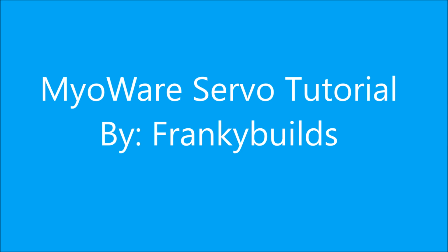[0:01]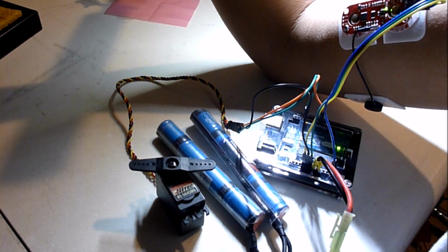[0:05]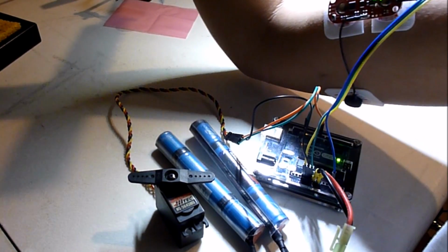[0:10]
Hello, today I'm going to teach you how to control the servo using the MyoWare sensor by Advancer Technologies.
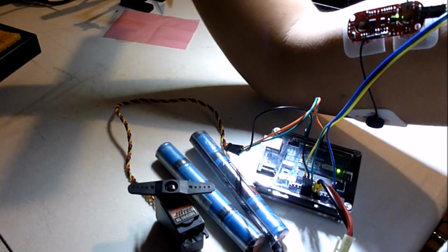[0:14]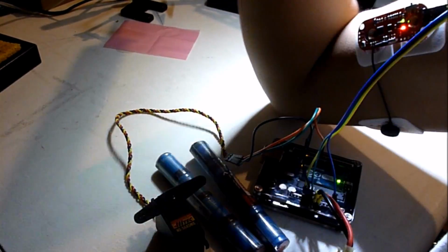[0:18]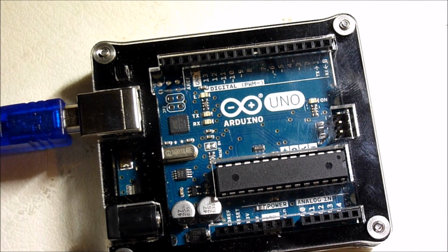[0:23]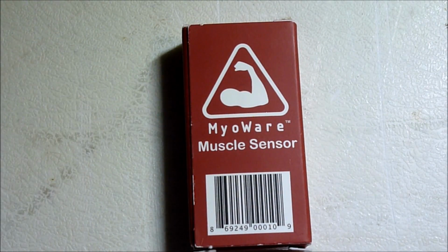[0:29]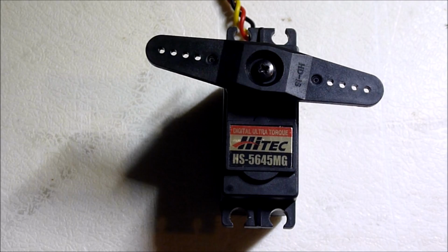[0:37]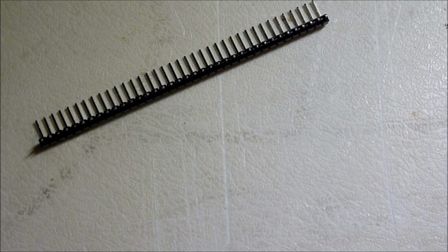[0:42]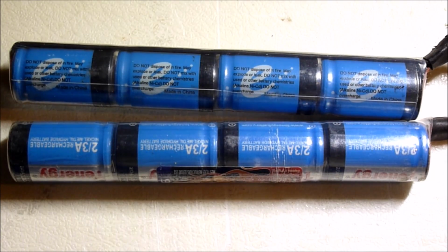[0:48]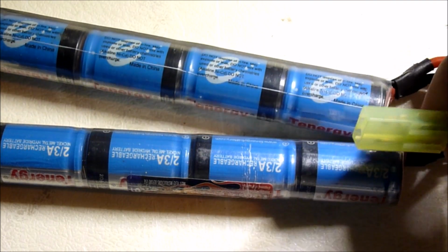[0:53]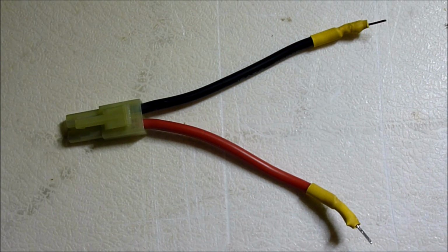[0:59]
So today I'm using an Arduino Uno, a MyoWare muscle sensor, a high torque servo, angled header pins, a 9.6 volt butterfly type battery with a small Tamiya type connector, and an adapter to attach my battery to the board.
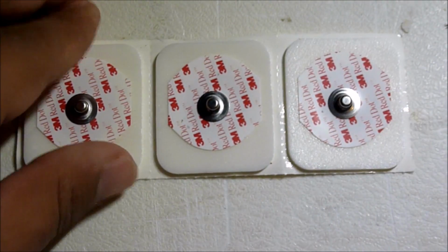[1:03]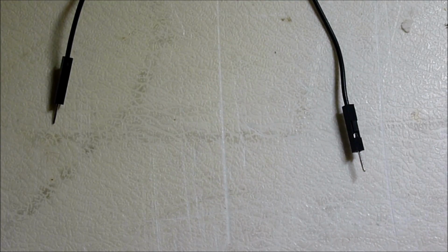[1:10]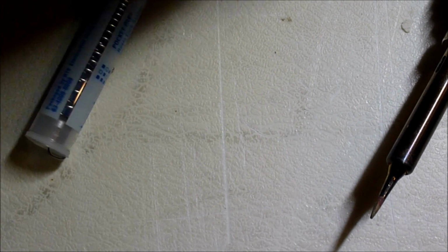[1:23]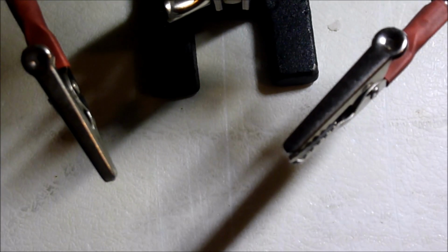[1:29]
3 electrodes, male-to-male jumper wires, female-to-male jumper wires, a soldering iron and some solder, and a helping hand to help me solder.
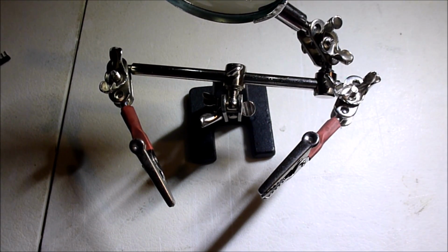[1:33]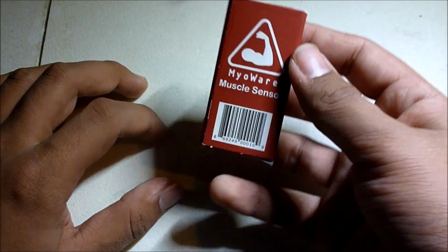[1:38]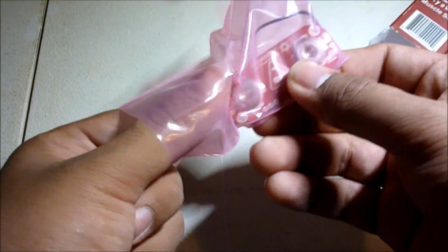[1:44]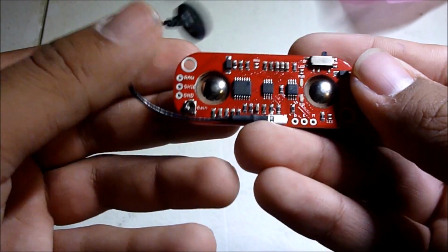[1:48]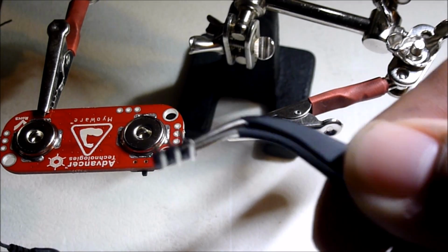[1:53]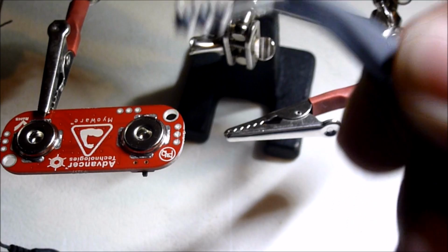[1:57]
So here we have the MyoWare muscle sensor by Advancer Technologies. Here I have 3 header pins which I'm going to solder onto the MyoWare.
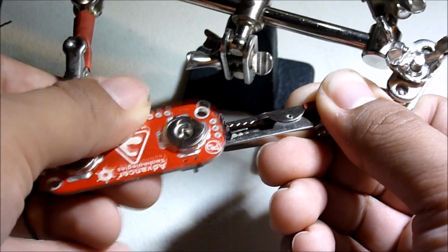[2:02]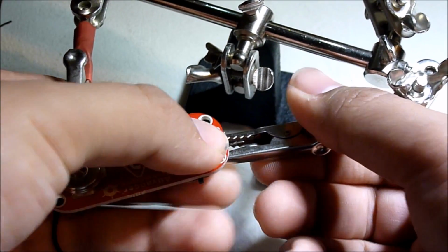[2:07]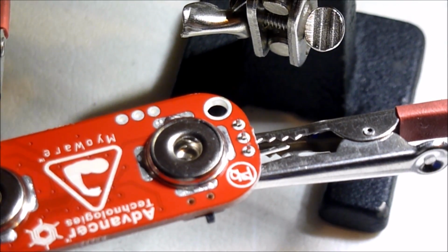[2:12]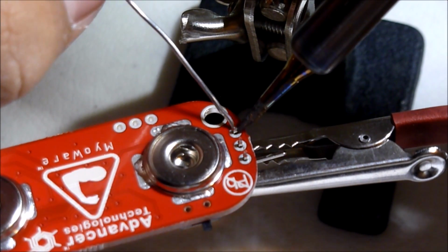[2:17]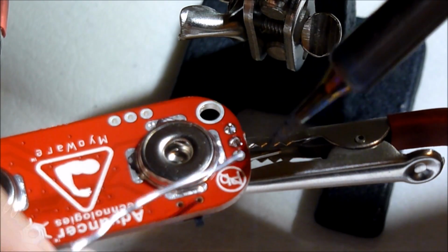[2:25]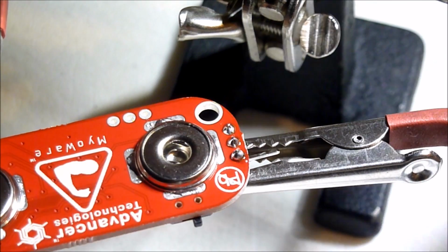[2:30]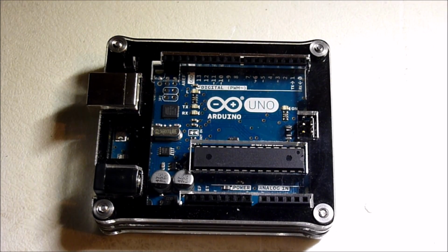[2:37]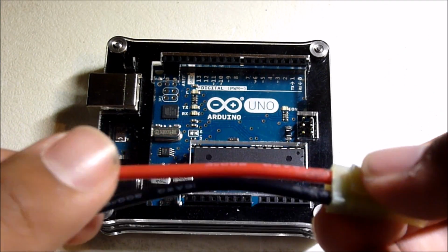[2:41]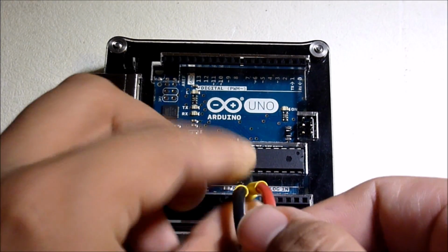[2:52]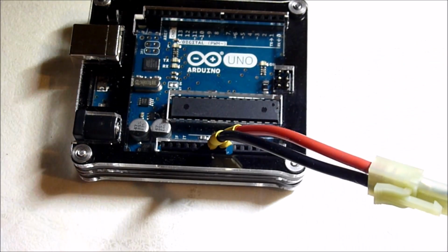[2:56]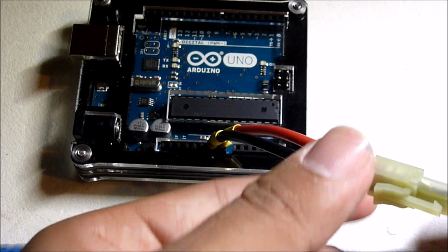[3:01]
So first, I'm going to attach my battery adapter to the Arduino Uno board. To do this, I'm going to attach the positive end to the VIN and the negative end to ground. Now, if I attach my butterfly type battery, the board should power up.
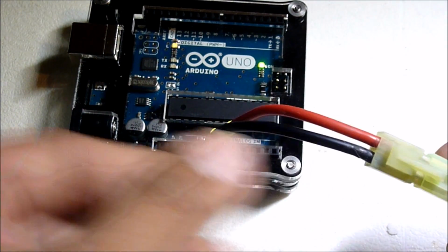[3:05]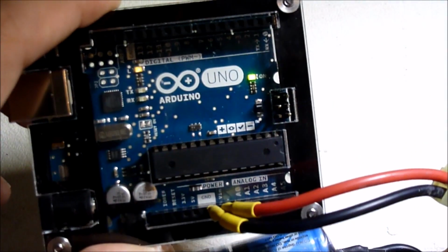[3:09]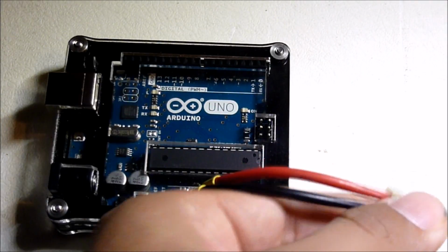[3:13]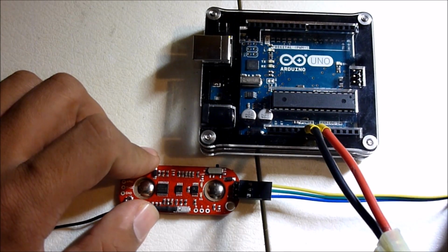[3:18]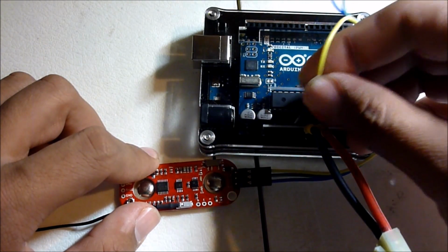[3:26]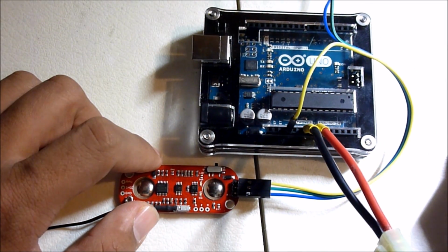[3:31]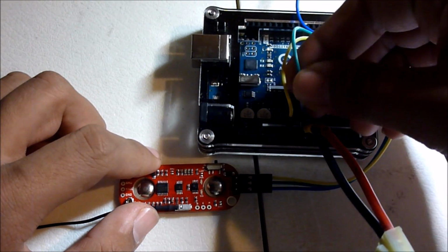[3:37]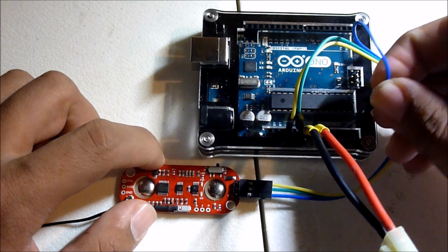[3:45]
Now, to attach the MyoWare to the Arduino board, first I'm going to get the positive lead and attach that to the 3.3 volt output on the Arduino board. Then I'm going to get the negative lead and attach that to ground. And lastly, I'm going to attach the signal lead to the A3 port on the Arduino board. This is all we have to do to attach our MyoWare to the Arduino board.
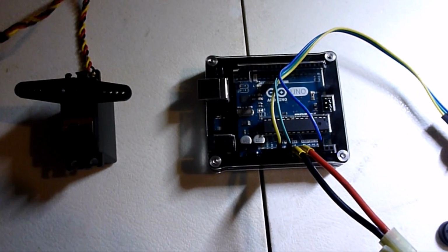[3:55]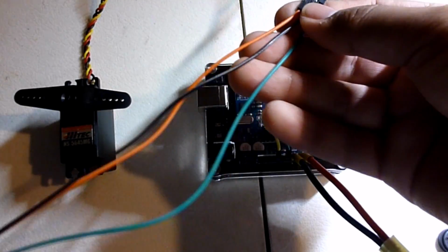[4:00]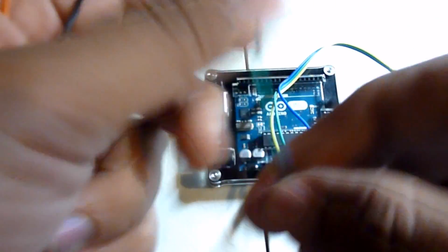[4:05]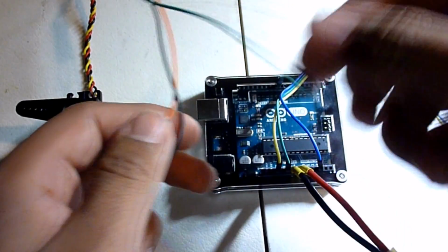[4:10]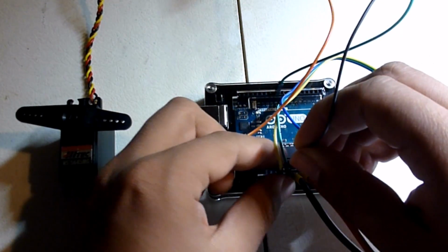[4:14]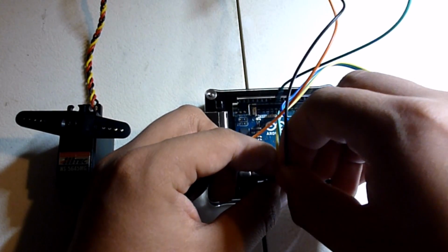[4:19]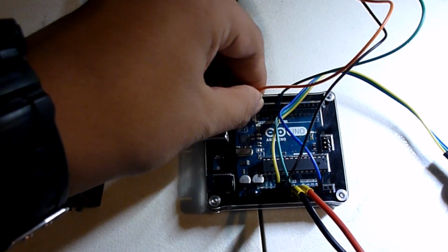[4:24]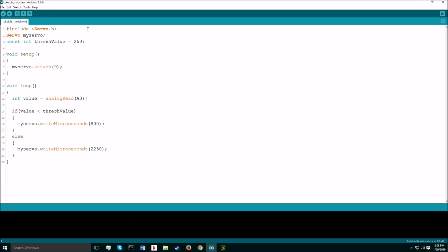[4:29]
Here I have my servo, and attached to it are 3 male-to-male jumper wires. So first, I'm going to get the signal and attach it to pin 9. I'm going to get the positive lead and attach it to the 5 volt output, and then I'm going to get my negative lead and attach it to the ground. This is all you need to make this circuit work.
Here is the program that I wrote to work with my MyoWare circuit. First, I included the servo library. Then I named my servo. Then I created a constant integer value called thresh value. I'll go more into what this does in a second. In the setup, I attach my servo to pin 9 in the Arduino board.
In the loop, I create an integer called value, which is equal to the analog read of pin A3 on the Arduino board. Pin A3 is the same pin that MyoWare is attached to. So in this if statement, it says, if the value of the MyoWare is less than this thresh value that we created up here, then it'll tell the servo to move to a certain position. To move the servo, I chose to write in microseconds. This best suited my needs.
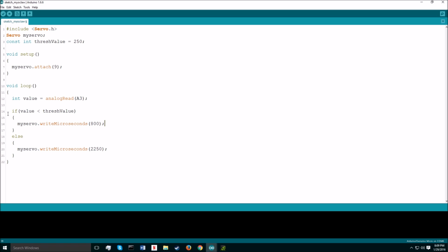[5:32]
So, if the value is not less than this thresh value, then it'll go to the else and move to this position here. For this thresh value, it varies from person to person. My thresh value was 250. With this program and the MyoWare attached to your bicep, you'll be able to manipulate the servo by flexing your bicep.
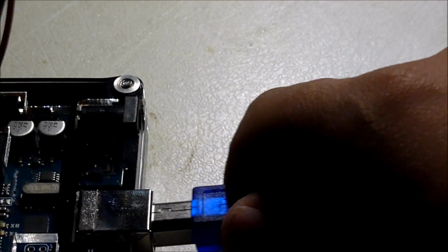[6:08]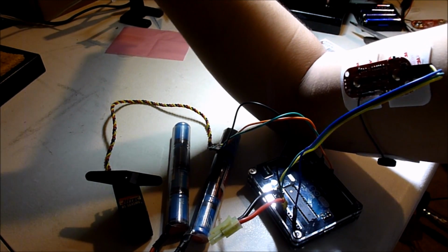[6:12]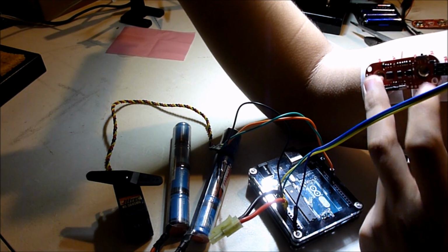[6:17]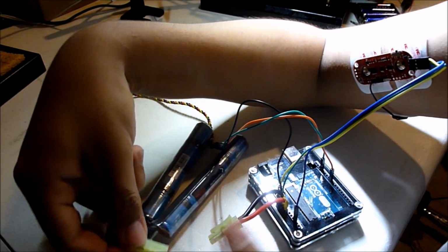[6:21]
Now it's time to upload the program to the Arduino, and then we can test it out. Now the final step is to attach the MyoWare to your bicep or whatever muscle you prefer, and then attach the battery to the battery adapter.
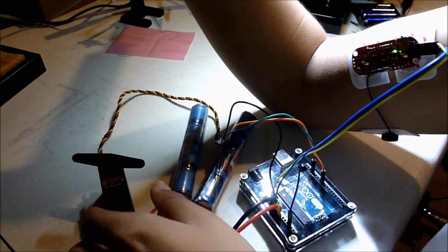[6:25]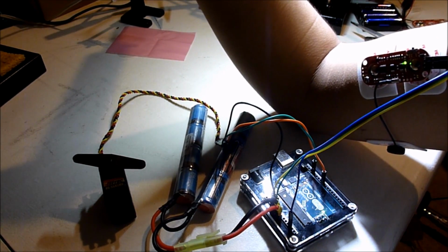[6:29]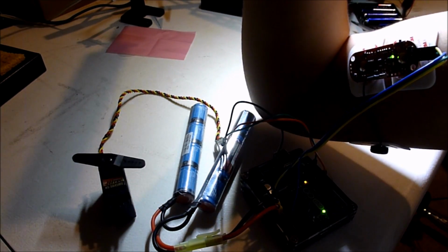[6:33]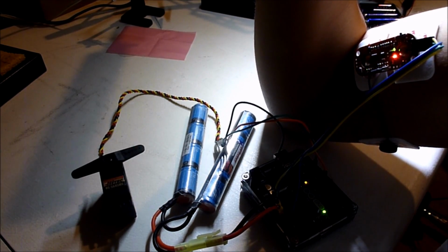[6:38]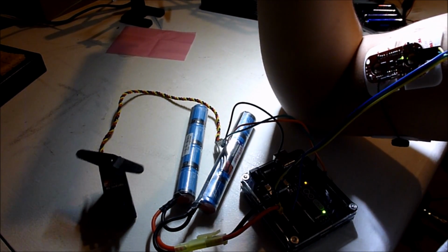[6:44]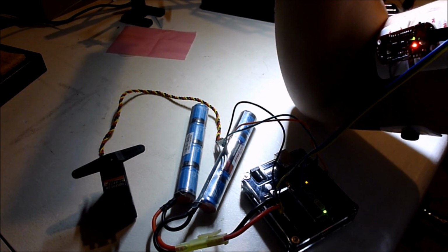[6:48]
Now, whenever I flex, the servo will move. I can even hold the servo to its max position, then let go.